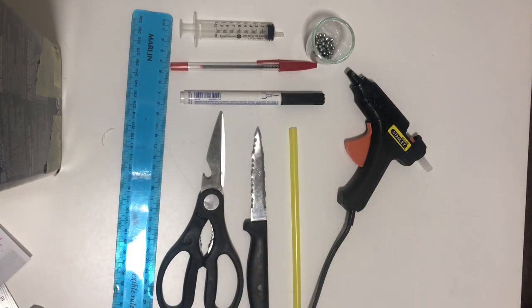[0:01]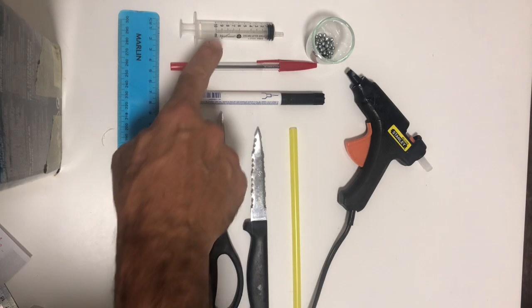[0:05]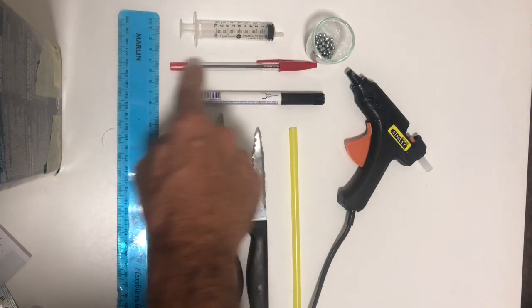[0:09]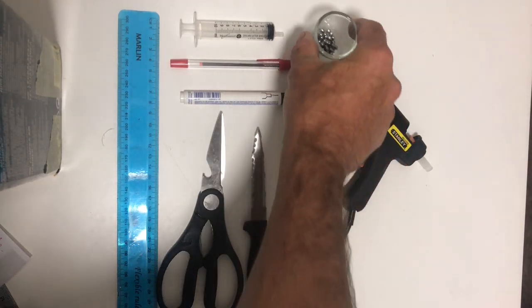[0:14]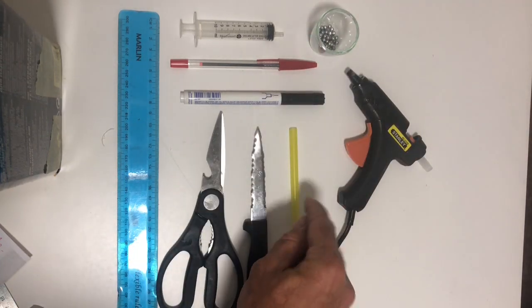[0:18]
So for this make a hydrometer, you're going to need a clear ruler, a 10 milliliter syringe, a pen. You're going to only use the cap from the pen, a marker pen, some BB ballast. These are just BB pellets, hot glue gun, straw, craft knife, and some scissors.
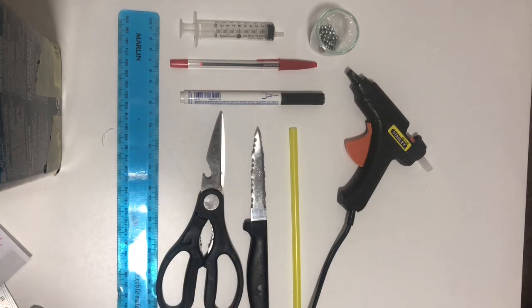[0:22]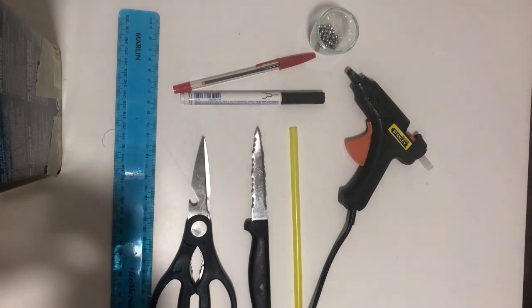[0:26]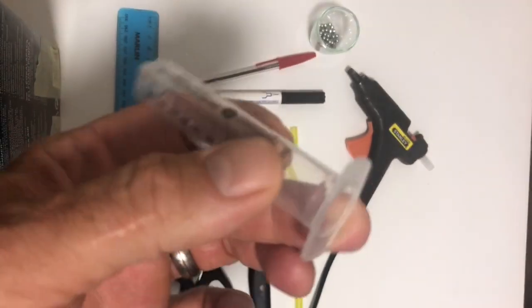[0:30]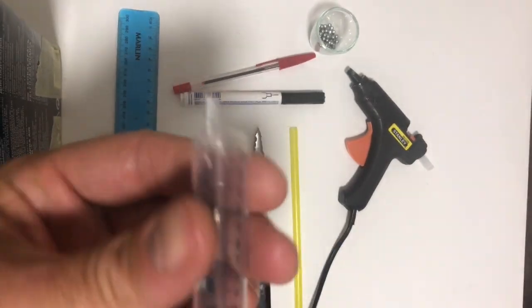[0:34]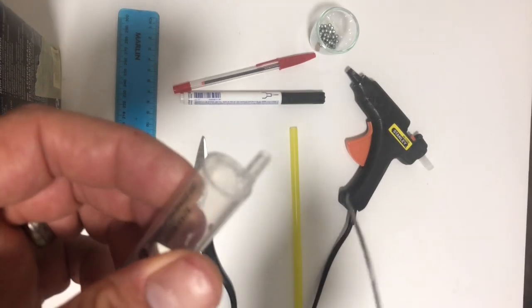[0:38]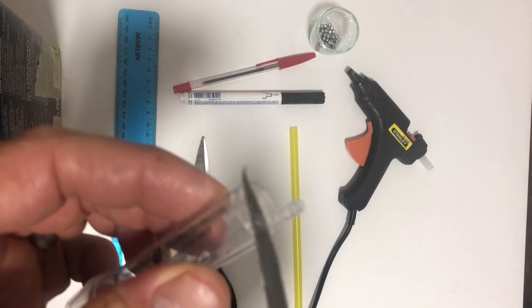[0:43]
You get your syringe, remove the plunger, cut the handles off the syringe with a pair of scissors. Cut the nozzle off. I used a craft knife for this. And I kept the angle of this syringe. The syringe goes to a point. You keep that point.
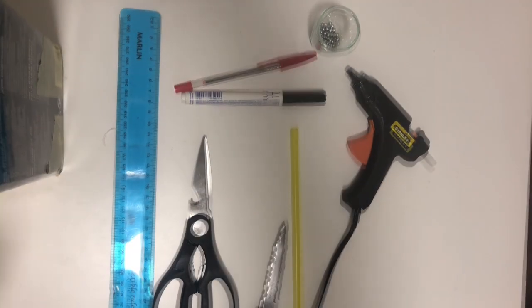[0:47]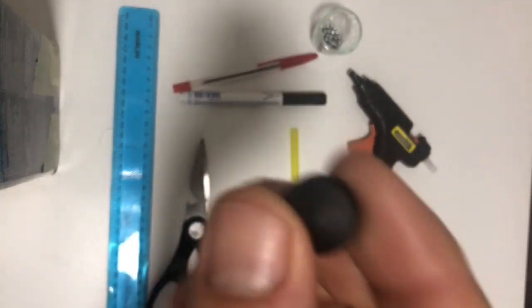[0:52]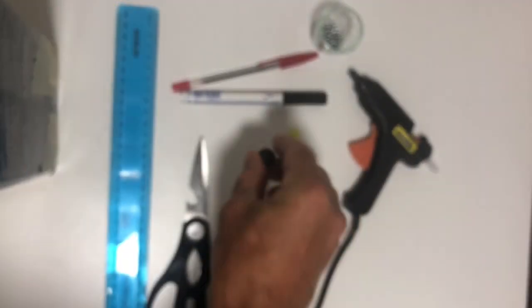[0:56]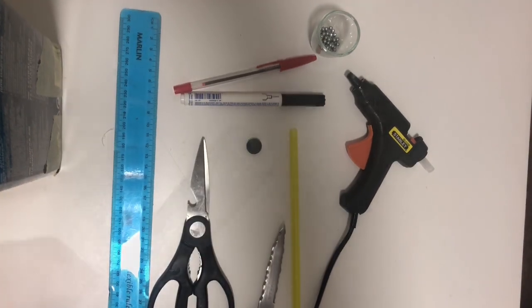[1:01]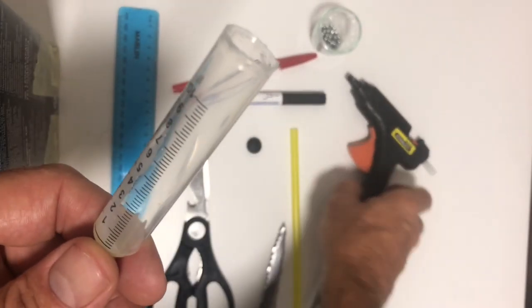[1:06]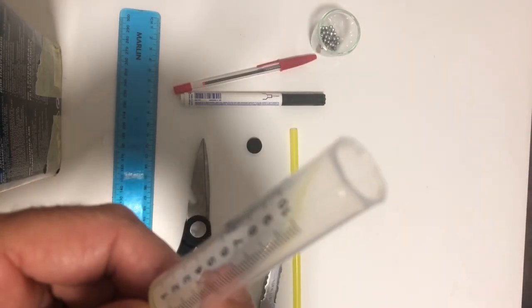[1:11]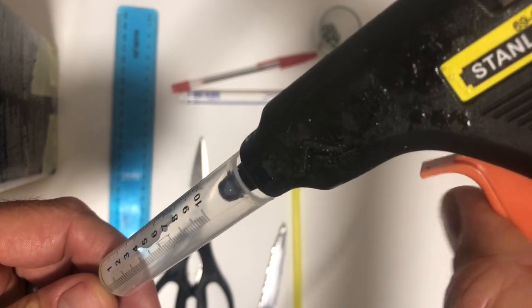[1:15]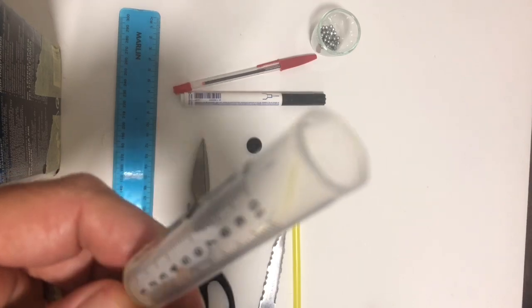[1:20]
You're going to remove the plunger from the handle and keep that for later. Right, you've cut the handle off and you've cut the nozzle off. Now you want to seal the hole left by the nozzle, so you take your hot glue gun and seal the opening from the inside. This will ensure no fluid can leak into the hydrometer later on when you do your testing.
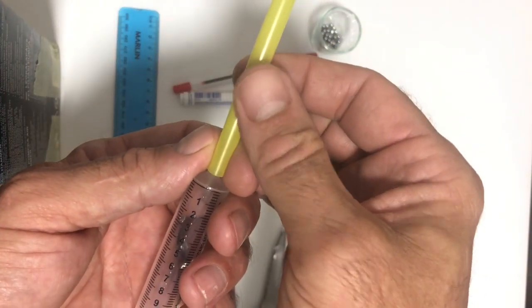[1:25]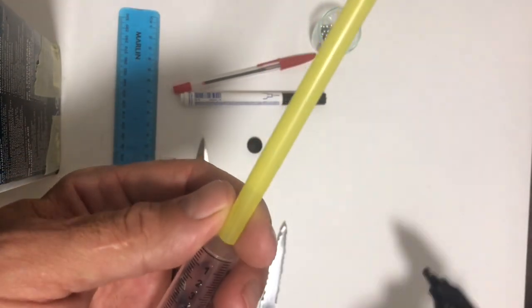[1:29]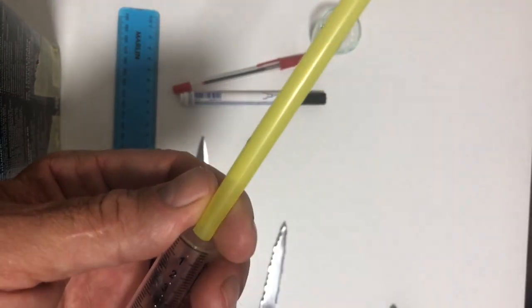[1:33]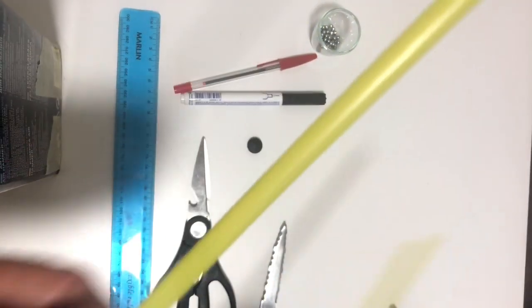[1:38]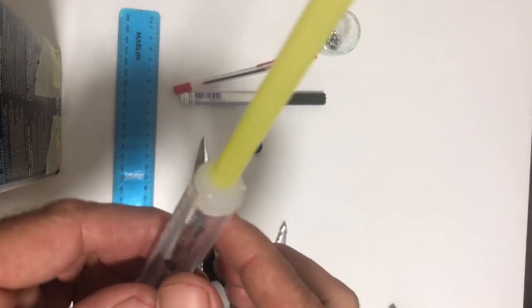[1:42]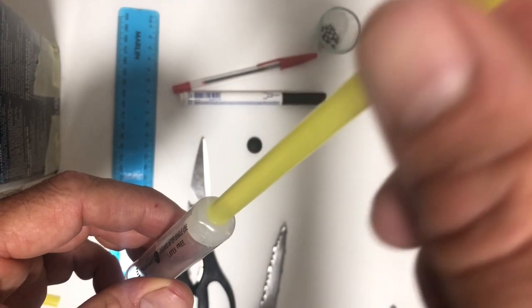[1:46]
Now you want to attach a straw to the top of the syringe. Again, using your hot glue gun, squirt some glue on top of the syringe and place the straw and hold it tight in place, keeping it as level as you can. As you can see, I've done it on this one and this is set hard and as level as I could possibly get it.
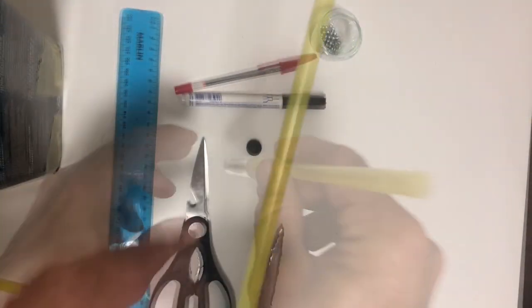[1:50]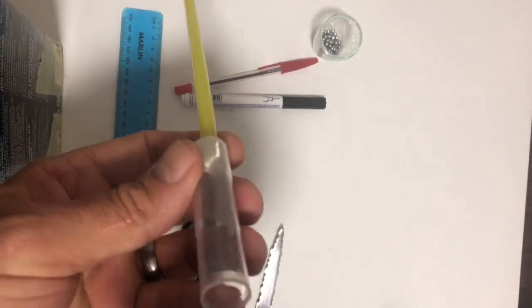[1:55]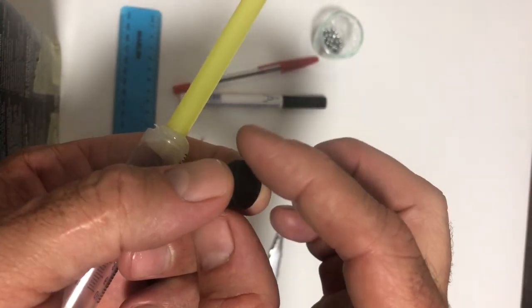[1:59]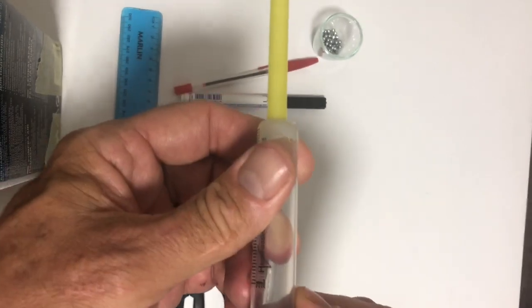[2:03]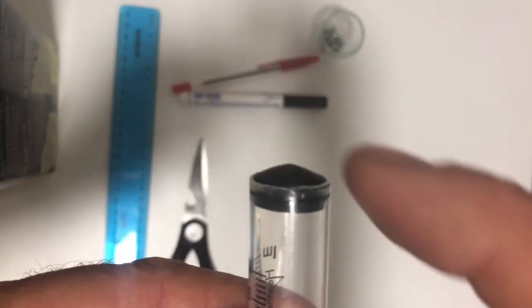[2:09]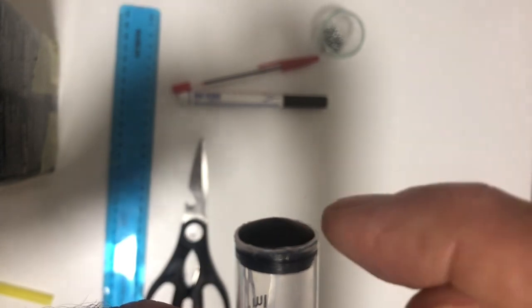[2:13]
Right, you've glued the straw to the top of your syringe. You're going to take your plunger and turn it upside down basically. So the point of the plunger is now outside the syringe. You can notice this angle if you look carefully. And this is to ensure that no air bubbles get trapped on the bottom of your hydrometer.
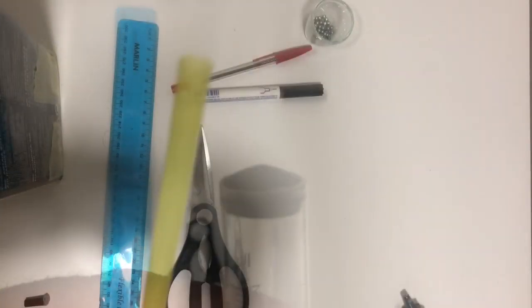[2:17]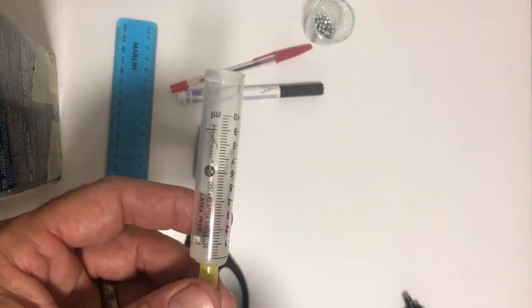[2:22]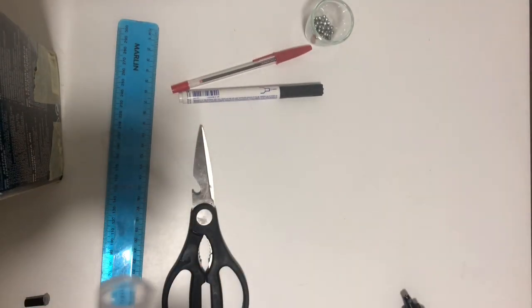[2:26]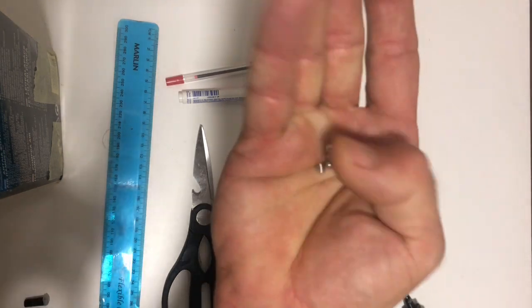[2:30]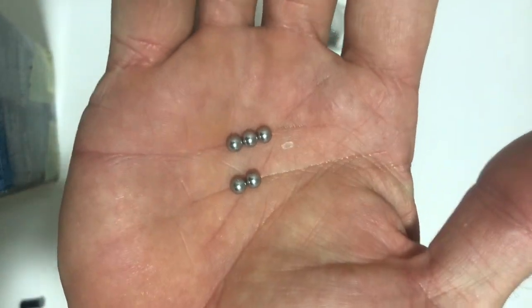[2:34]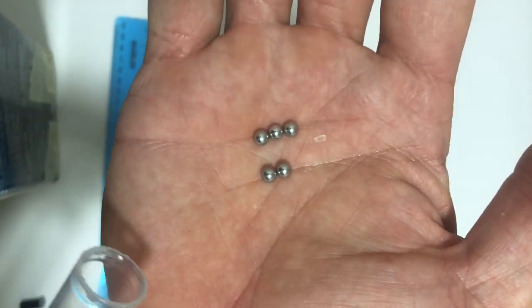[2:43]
This hydrometer used a 7 millimeter straw and a 10 milliliter syringe. This worked out with me using BB bullets that I use 45 BB bullets, but obviously you're going to have to use whatever you've got available and add and remove accordingly so that you get the adequate height of the top of your hydrometer sticking out of the fluid.
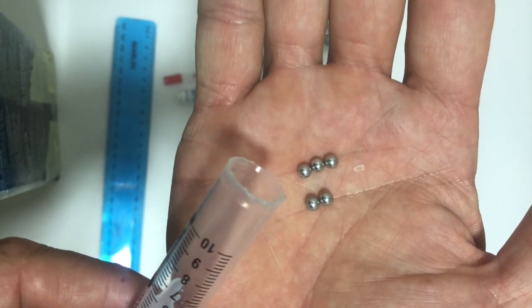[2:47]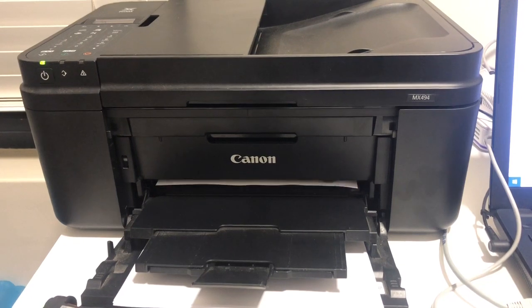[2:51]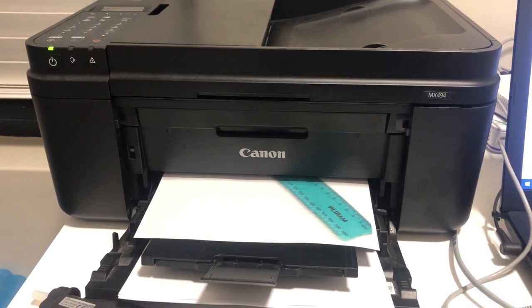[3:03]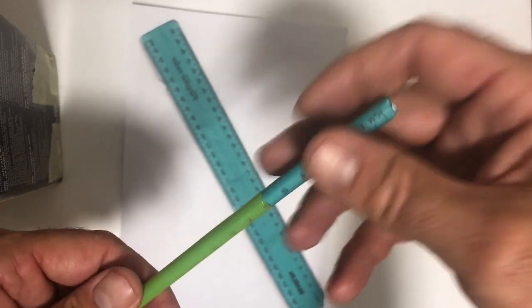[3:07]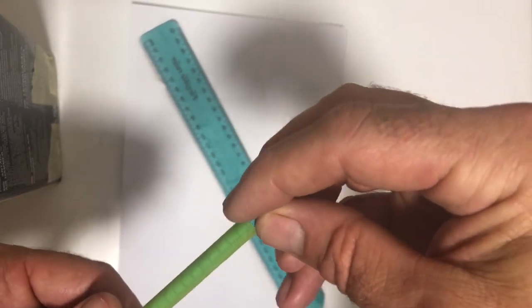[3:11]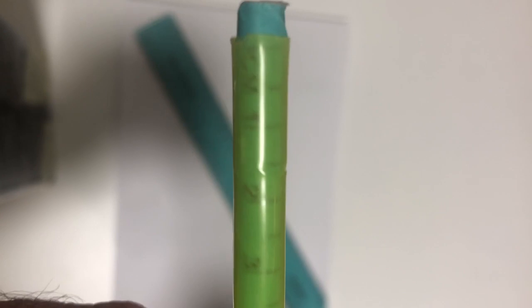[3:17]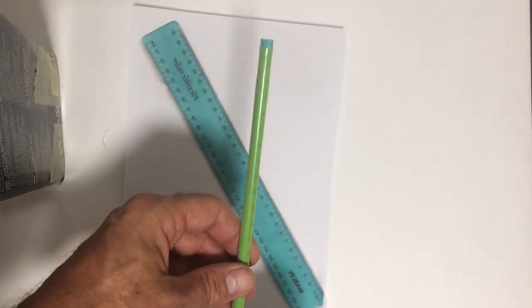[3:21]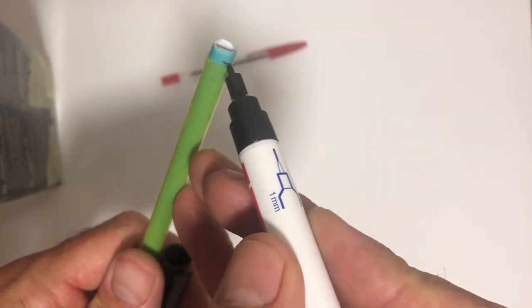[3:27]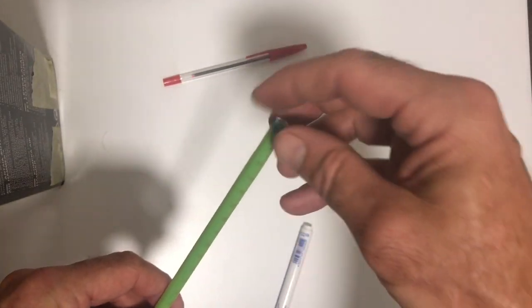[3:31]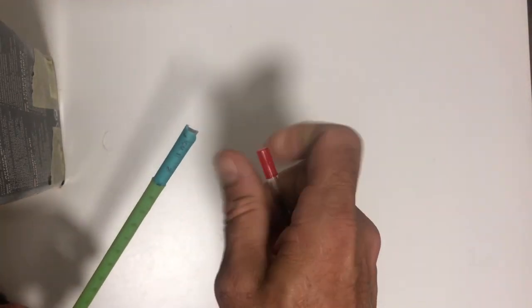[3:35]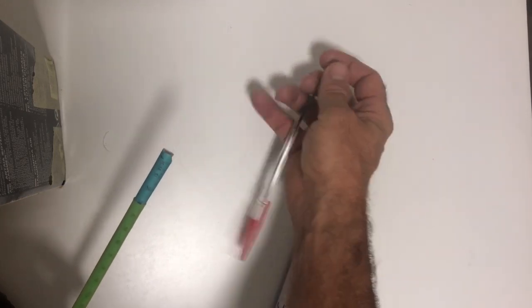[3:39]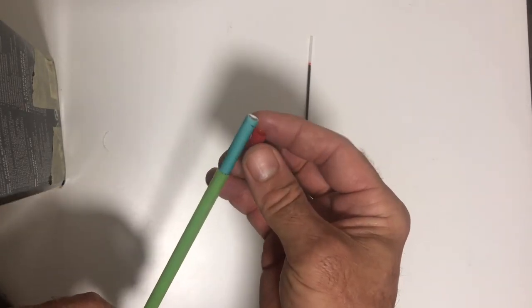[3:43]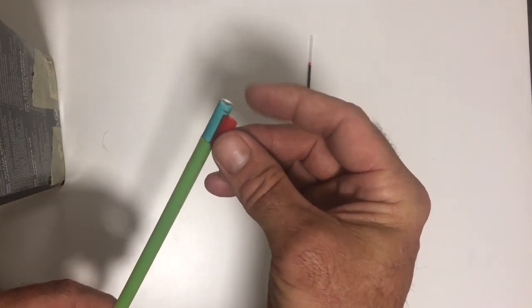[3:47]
Stick a ruler in your photocopier and print a copy off. Cut out the ruler and trim to the length of the straw and insert it into the straw. Make a mark to trim the excess off. Pull the paper out slightly. Measure it with the tip of the back of the pen and you're going to trim that to suit. So when you slide the paper in, the cap sits on top of the paper holding it in place.
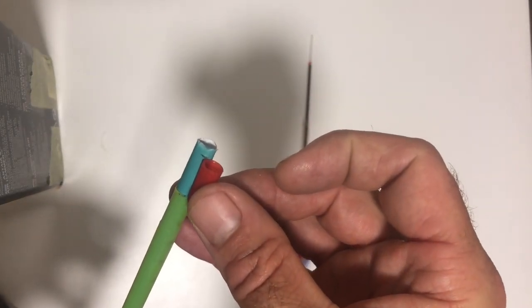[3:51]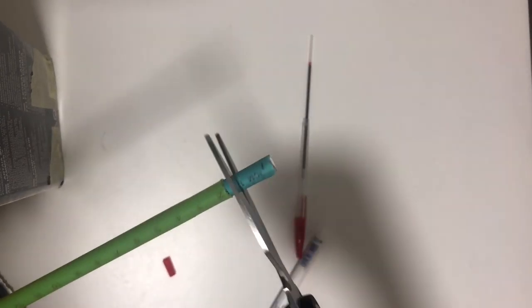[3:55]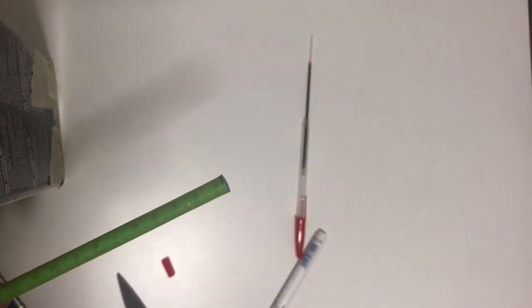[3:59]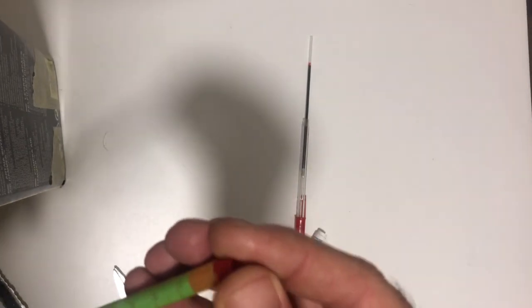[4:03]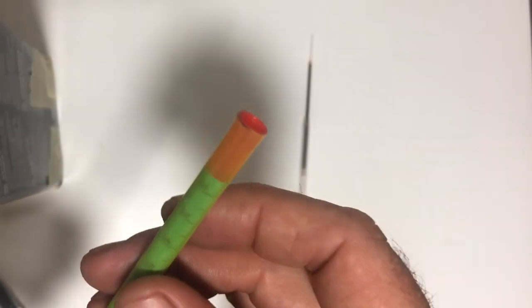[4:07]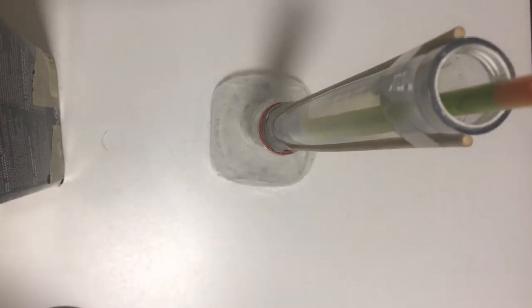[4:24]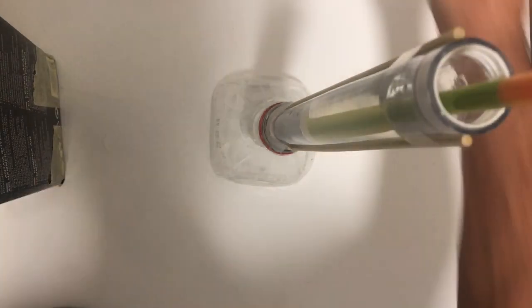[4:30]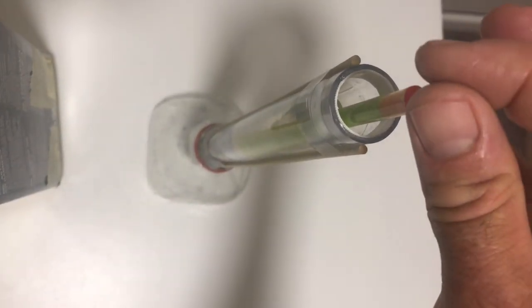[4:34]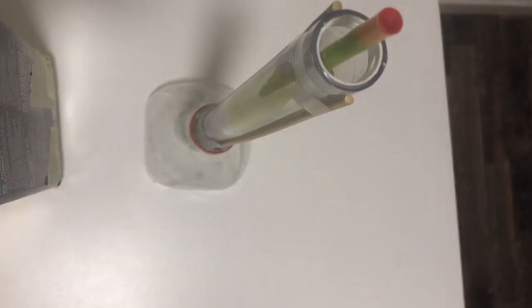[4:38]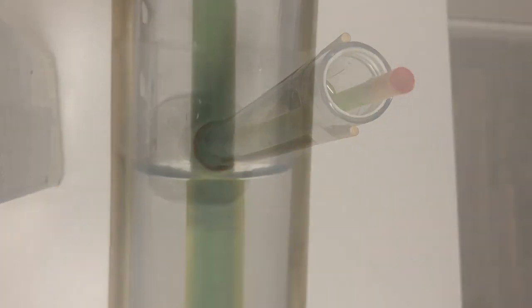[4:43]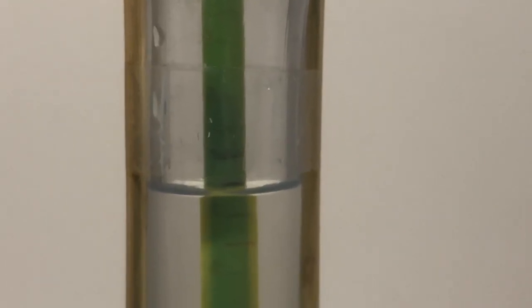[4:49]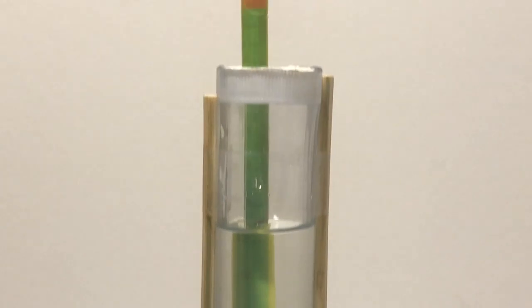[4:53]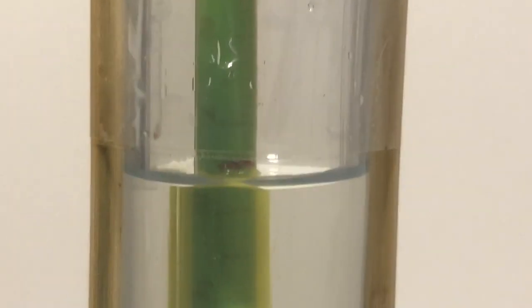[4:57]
Now you've got your hydrometer assembled, put it in the cylinder and have a look if you're happy with how much of the hydrometer is sticking out of the water, just with plain old H2O. In this case it was sticking out slightly too much, so I weighted it down with one ball in the top of the cap and that looks perfect. Make a note of where the water line is in relation to the print. Then remove and make a distinct mark. Once you've made a distinct mark, stick it back in the water and double check.
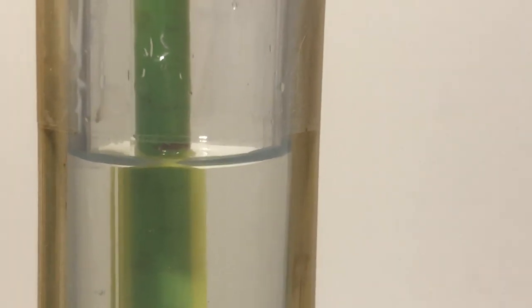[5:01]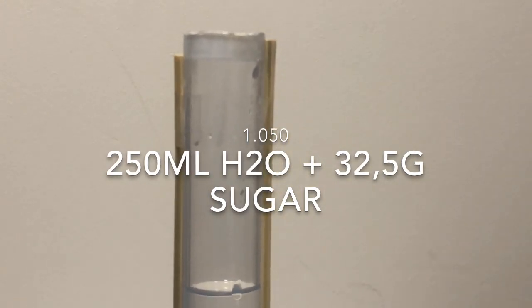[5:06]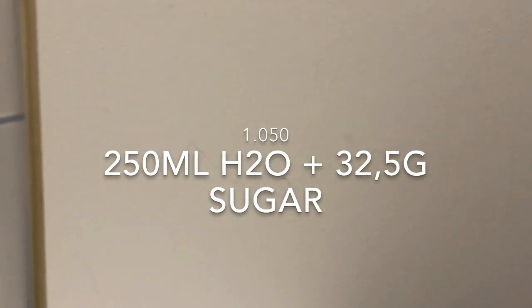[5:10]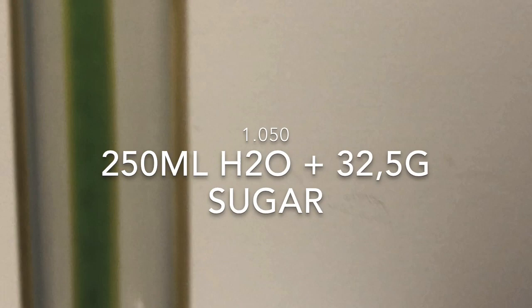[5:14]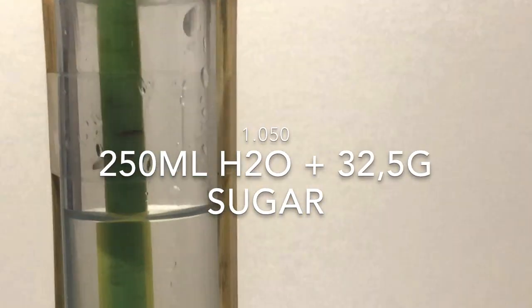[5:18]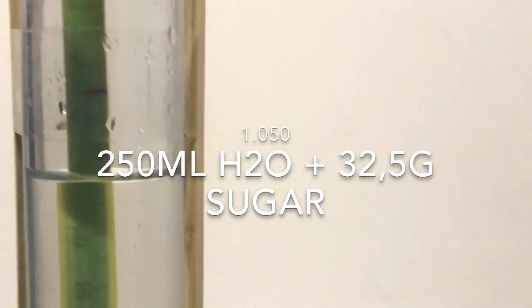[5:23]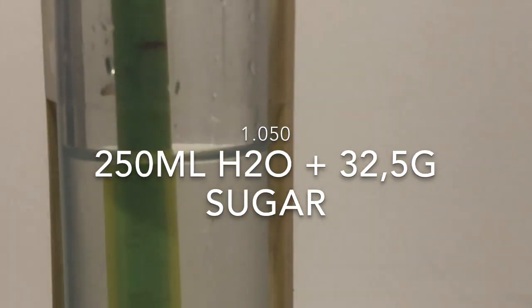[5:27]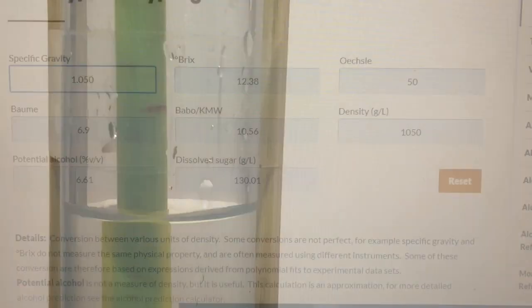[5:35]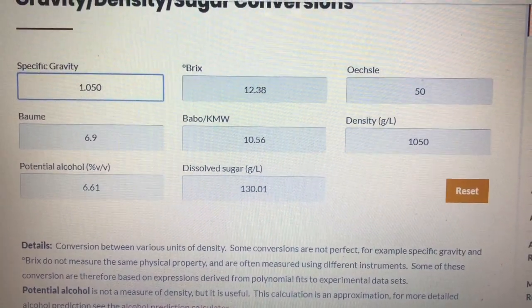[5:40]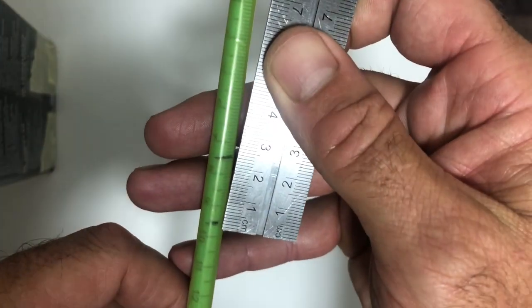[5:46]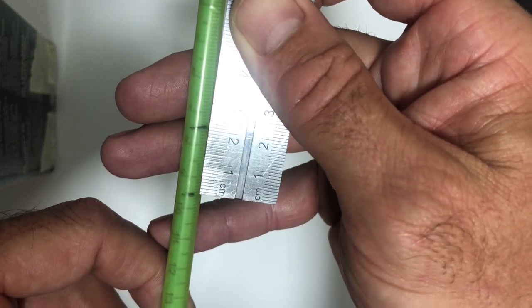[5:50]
Now I'll mix 250 ml of water with 32.5 grams of sugar and insert your hydrometer. This should give you an SG of 1.050, although you won't be able to read that now. All we're doing is getting a reference of where 1.050 is. Make a note on the back of the printed paper, remove the hydrometer and make a distinct line on the reference you noted. Now that you have your two measurements, measure the distance between the two, and in this case it's 21 millimeters.
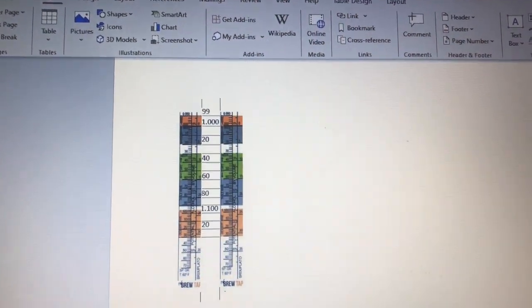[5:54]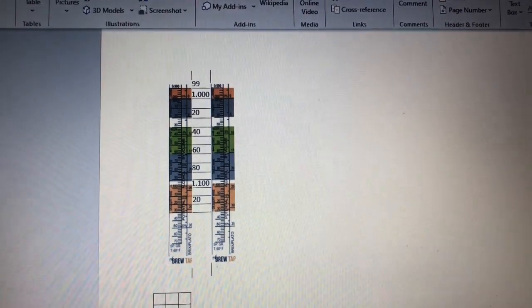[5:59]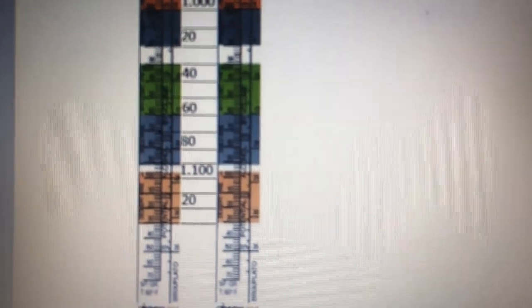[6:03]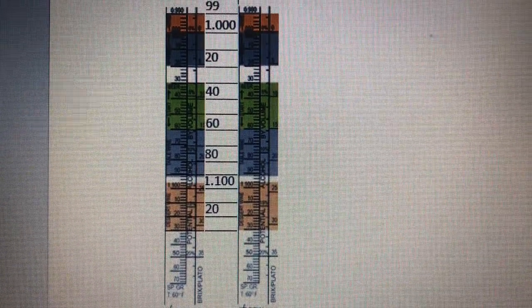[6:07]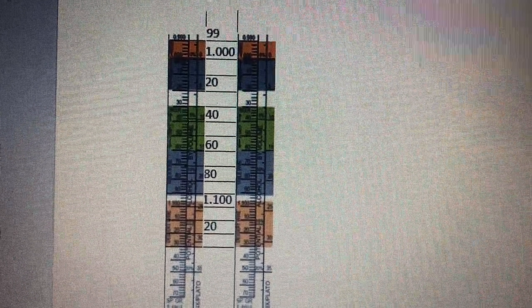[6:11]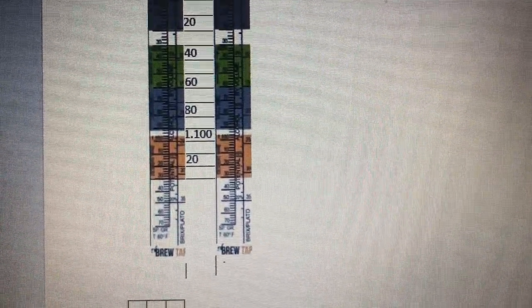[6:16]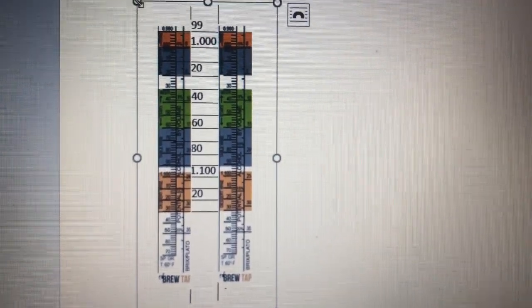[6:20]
I found an image of a hydrometer online. In the middle of that image, I inserted a column and I labeled these columns myself. These correspond exactly with what was on the image. Now this image can be altered in size, make it bigger or smaller. And this will be helpful later on when you want to transfer the distance between the two points on your straw to the information on the image.
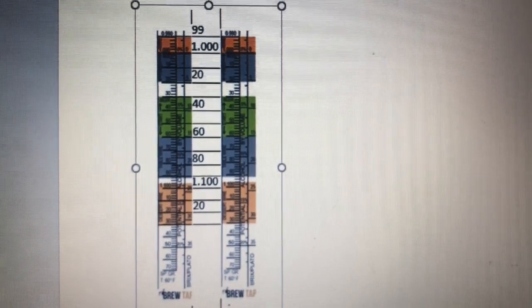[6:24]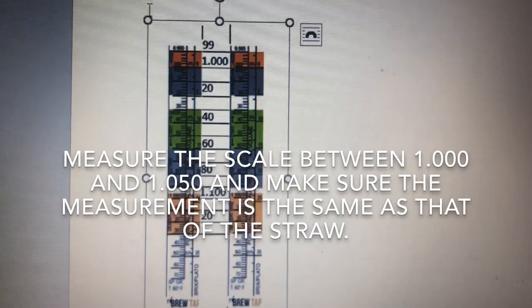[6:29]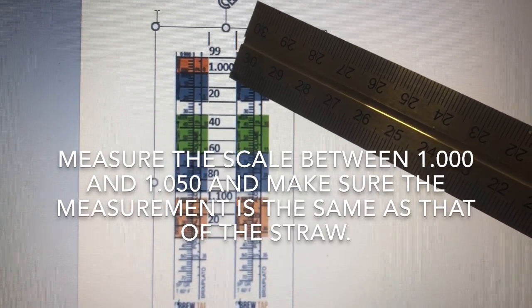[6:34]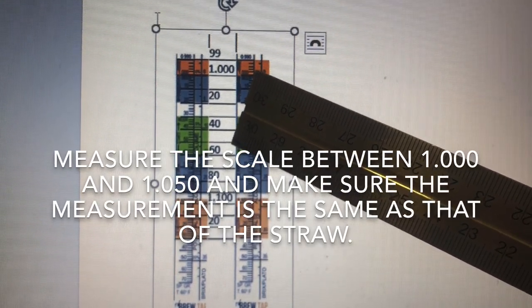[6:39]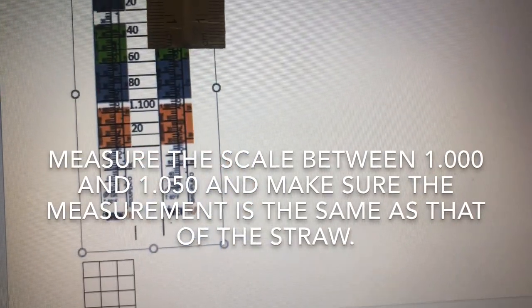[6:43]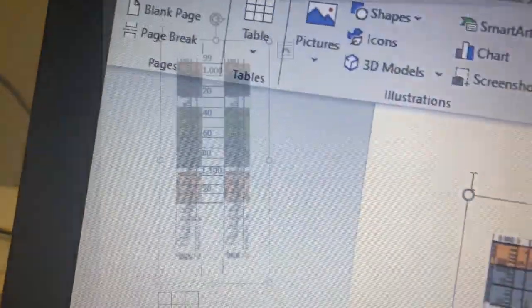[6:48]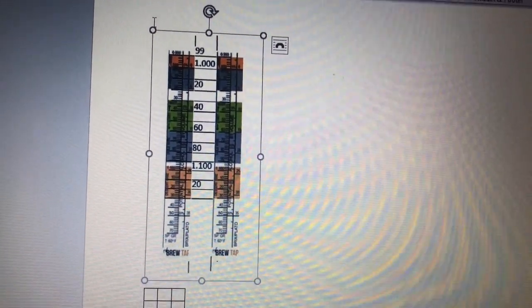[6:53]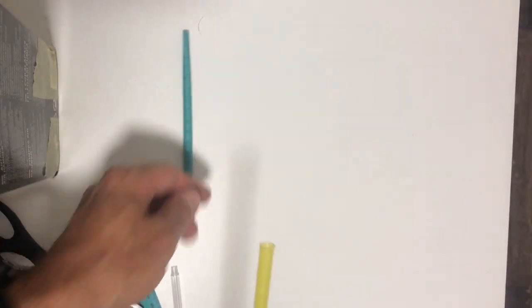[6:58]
We're looking for 21 millimeters from 1.000 to 1.050. So let's put it on 1.050. Once you've cropped the size correctly, go ahead and print that off. Once you've done that, remove the cap and remove your pre-printed ruler.
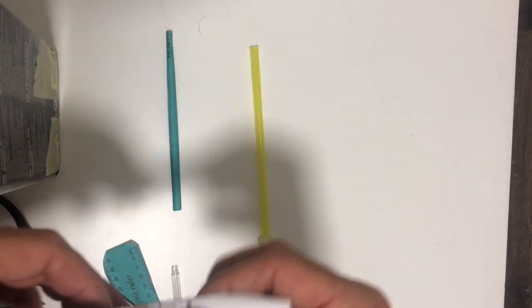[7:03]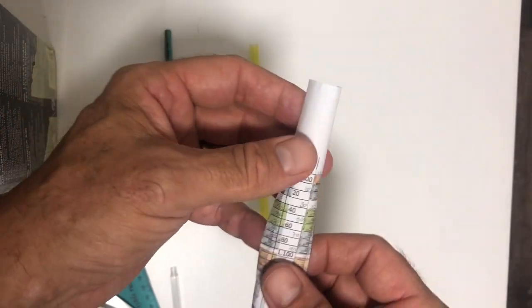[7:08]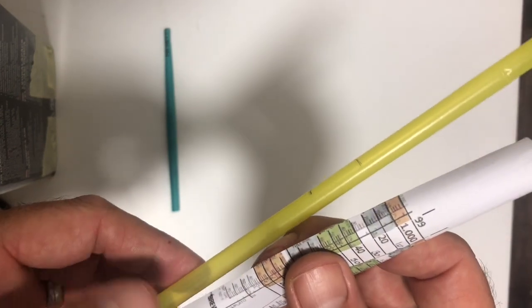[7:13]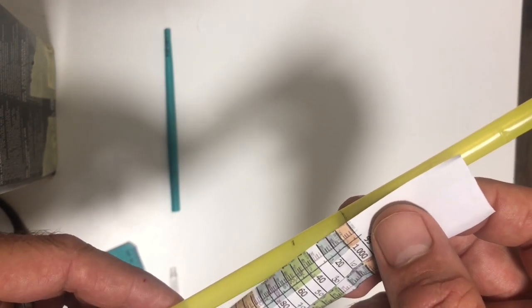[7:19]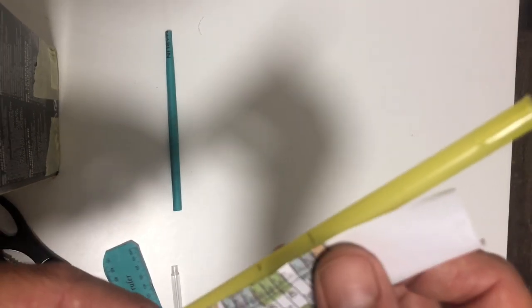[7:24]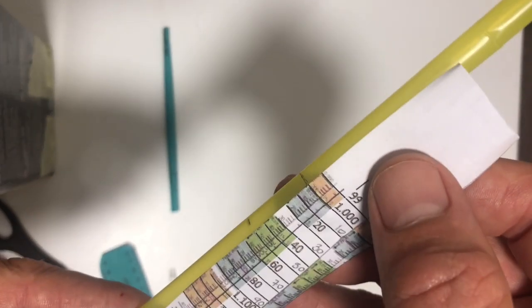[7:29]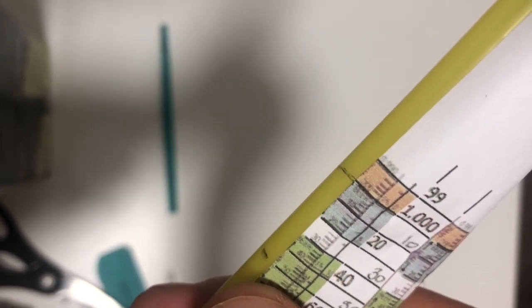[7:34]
Right, you've printed your cropped image. Go ahead and cut it out and you're going to roll it up and stick it into the straw. But before you do that, make sure that your 1.000 mark lines up with the 1.050 mark. Once you've done that, ensure that the total length of this paper that you're going to insert into the straw, when it's inserted into the straw and bottoms out, will actually line up with your corresponding information on the straw.
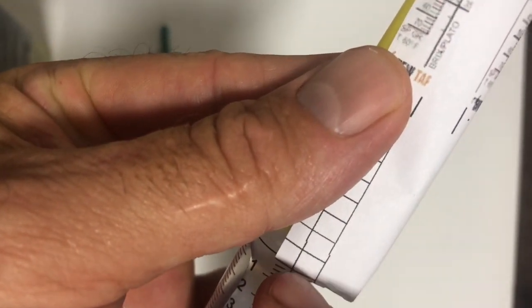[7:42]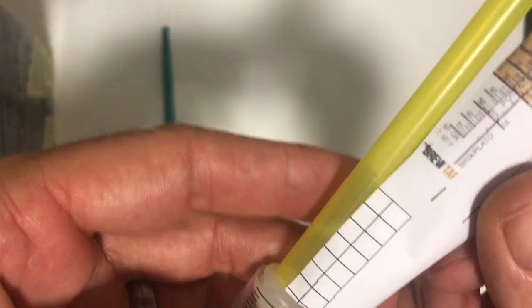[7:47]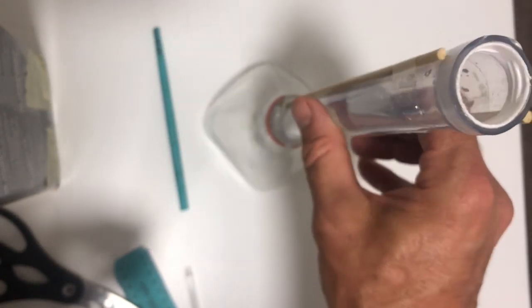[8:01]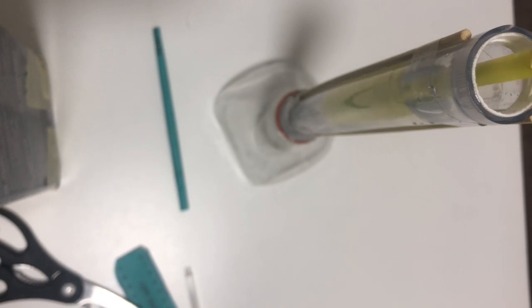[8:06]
Once you're happy with that, roll it up and insert it into the straw, and you are almost ready to rock and roll. Go ahead and put the cap on the end of your hydrometer and float your hydrometer, making note of where the 1.000 corresponds with the water line. In this case, it was slightly light.
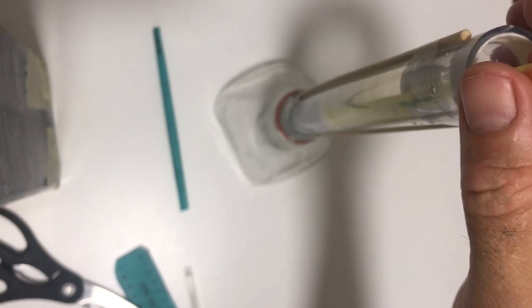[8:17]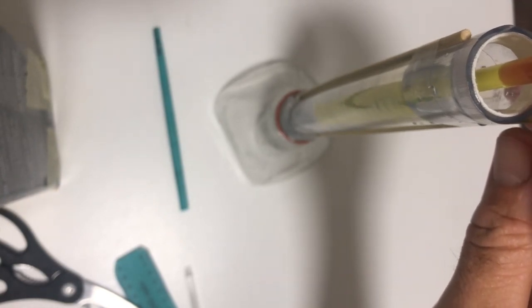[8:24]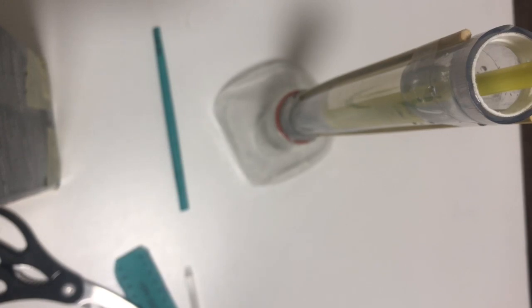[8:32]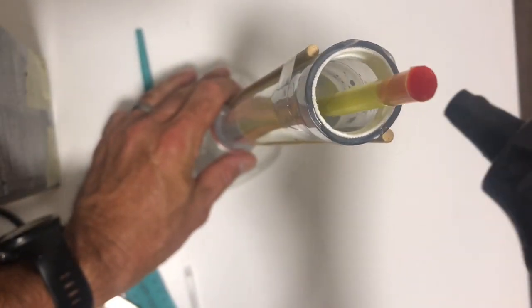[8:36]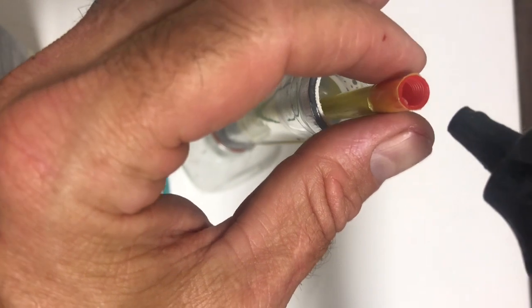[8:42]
So all I'm going to do is get a bead of hot glue gun and seal the cap. The cap needs to be sealed off in any case, because you don't want any water accidentally getting in there without you knowing and giving you a false reading later on. So here I am going to put a squirt of hot glue and cover the cap, and this should make it slightly heavier and give me a true reading.
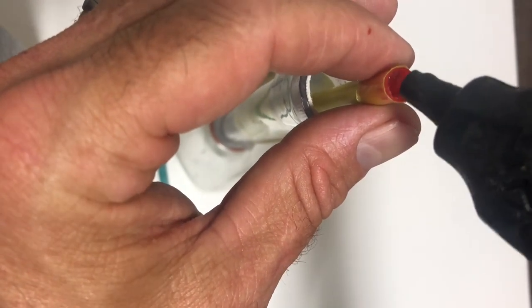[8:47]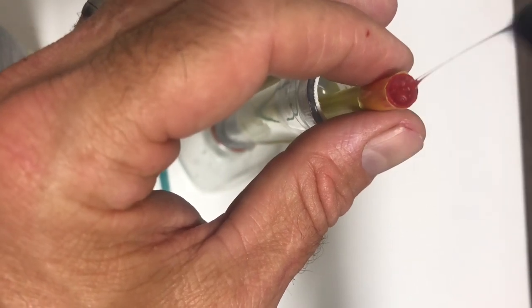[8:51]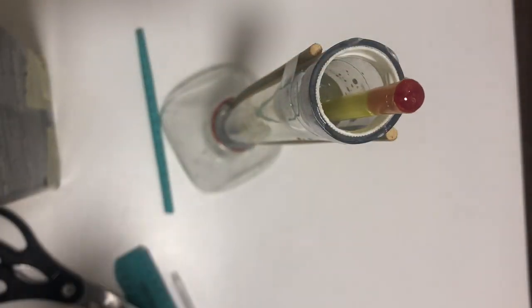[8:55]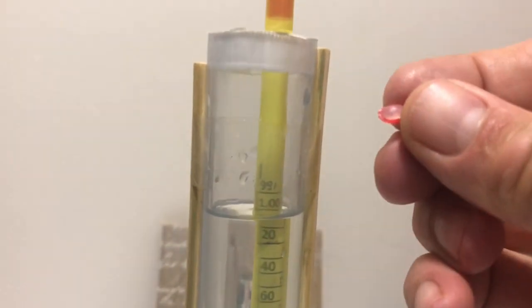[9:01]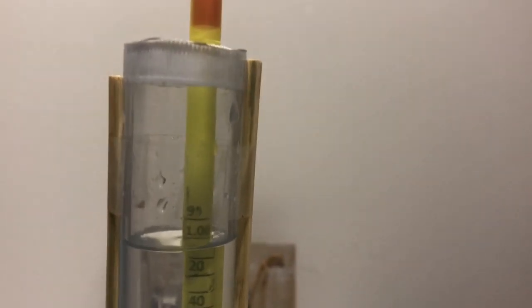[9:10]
Once the glue had set, I inserted it in the cylinder again to get another reading. In this case, I had to trim a slight bit of the cap for it to sit perfectly, and as you can see, it's perfect.
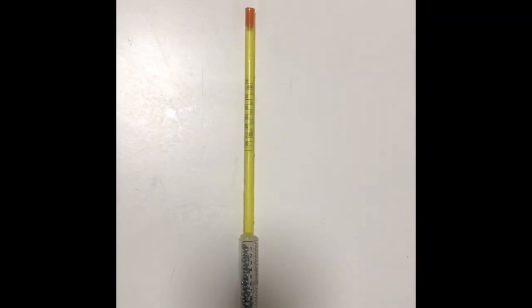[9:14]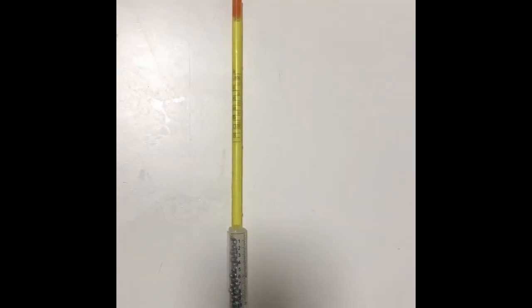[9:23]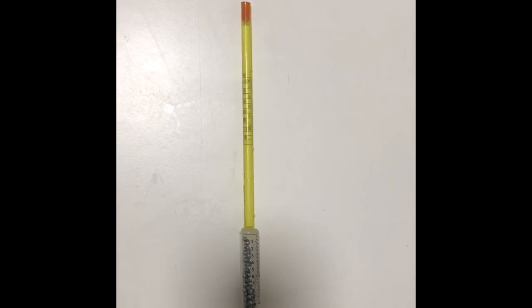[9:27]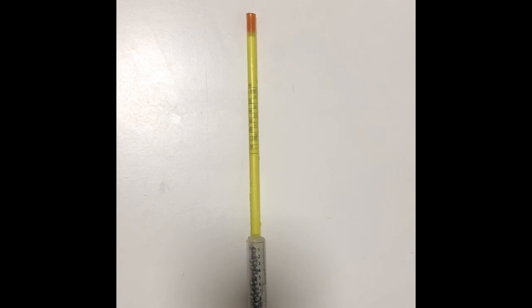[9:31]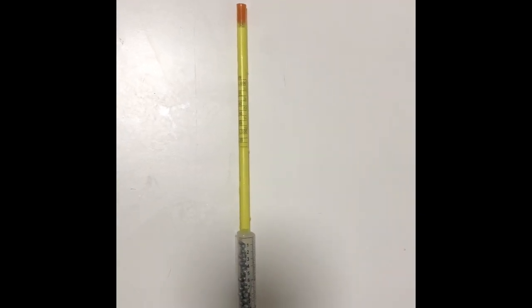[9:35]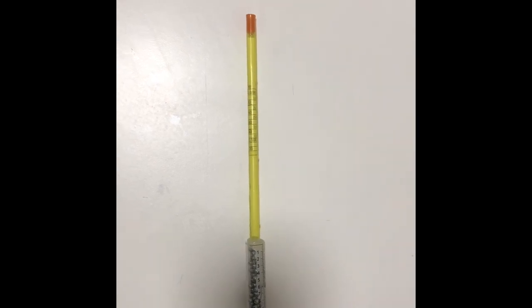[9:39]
I made this hydrometer because I don't have one, obviously, but it would be interesting that if somebody does choose to make one and they do have a store-bought hydrometer, that they could compare the two and see in fact how accurate this hydrometer is. I have made a rudimentary brew with this hydrometer, and it does give me a reading. How accurate that is, I'm not too sure. The brew did make my legs weak, so something's got to be right.